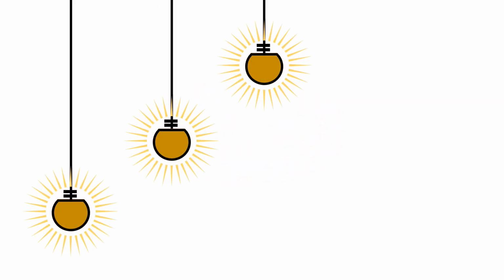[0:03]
Can we make a very low-cost water activity meter for foods, costing only $20?
I was invited as a speaker to the 15th International Symposium on the Properties of Water, that is ISOPOW 15, which was held at Purdue University, West Lafayette, Indiana, USA. It was from 11 to 13 June 2024. This ISOPOW was honoring Professor Ted Labuza's contributions to the understanding of food material science and water activity.
In that conference, my colleague Professor Wes Vandery mentioned to me, "Shofir, you could make a water activity meter costing only $20." I asked him, "Is it?" I fabricated one and tested its performance. Please keep watching this video until the end and you'll find more on it.
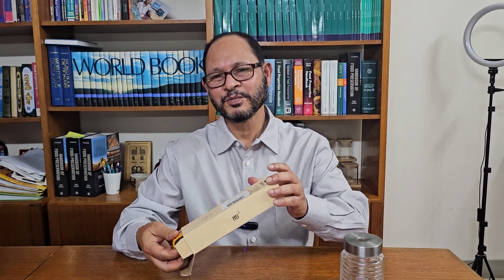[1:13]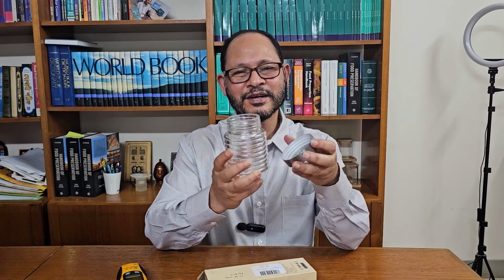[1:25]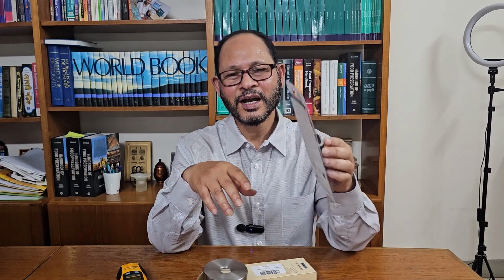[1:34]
I ordered a digital hygrometer or air humidity meter through the internet. Its cost is less than $20. I purchased a glass jar to hold the sample, and the jar cap has rubber coating to make it airtight when it is closed. In addition, I had araldite glue at home. I am now showing how to make a cheap water activity meter.
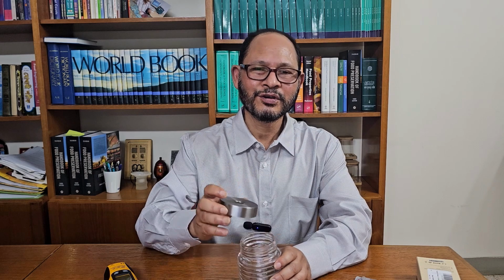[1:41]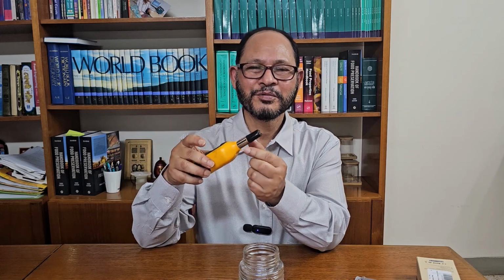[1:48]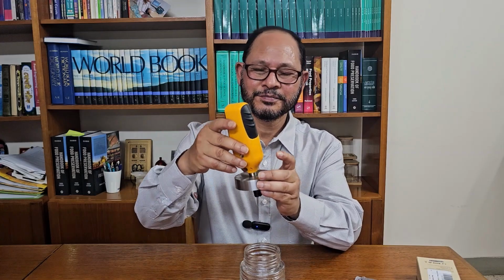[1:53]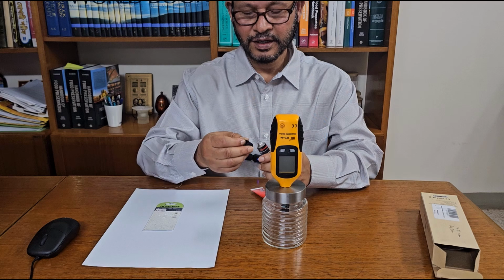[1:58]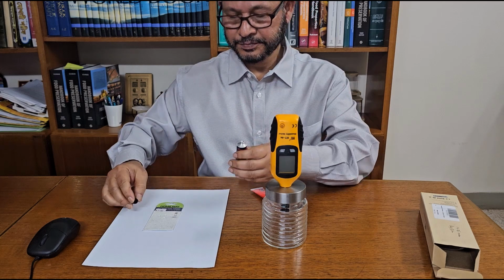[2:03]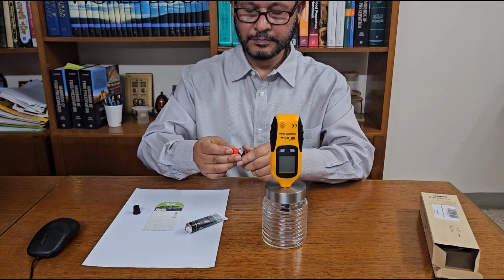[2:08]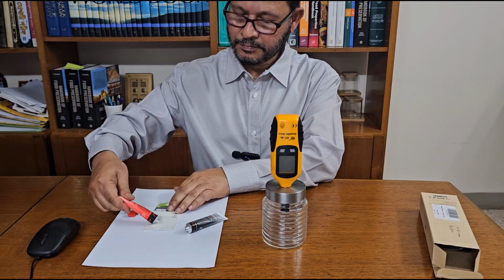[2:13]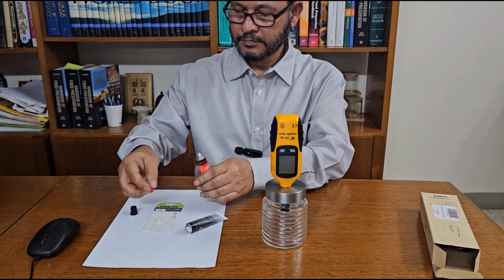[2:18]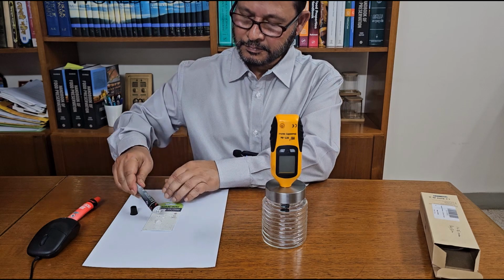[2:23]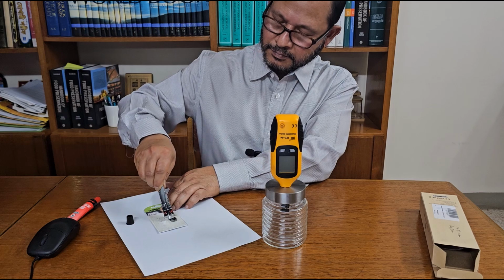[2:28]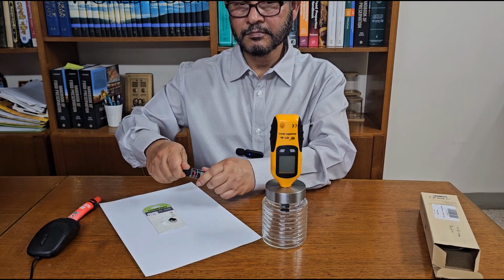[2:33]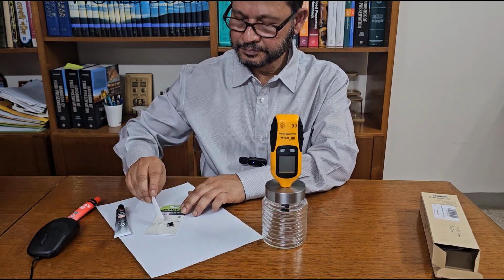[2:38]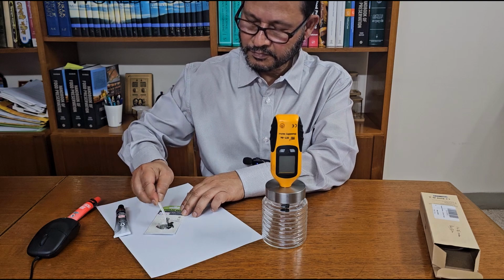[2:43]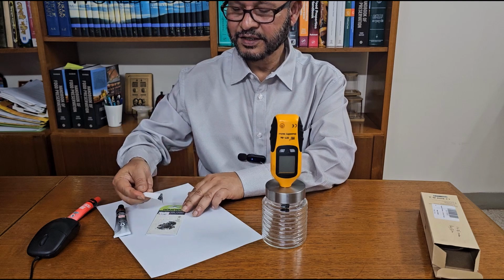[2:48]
I made a hole in the jar lid, the same as the diameter of the hygrometer tip. I am now fixing the hygrometer inside the jar lid with glue. Now I am putting the araldite glue. It is setting; the pack mentions that it will set within 4 minutes.
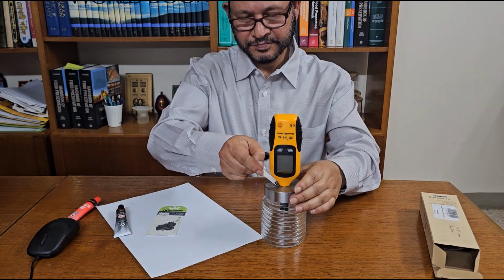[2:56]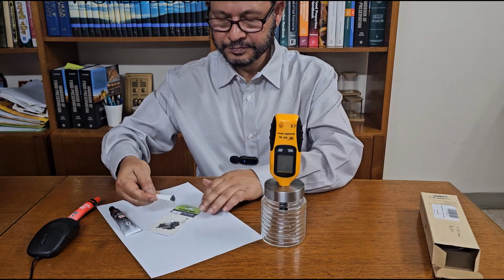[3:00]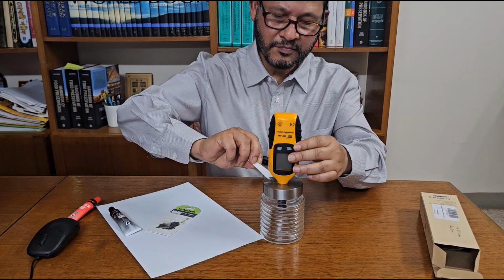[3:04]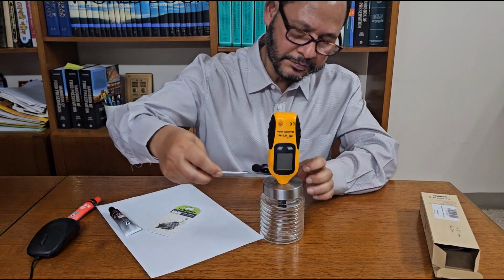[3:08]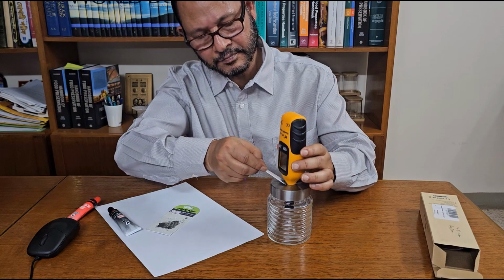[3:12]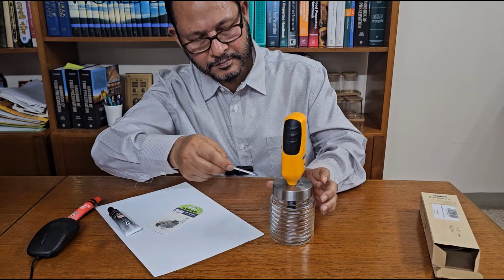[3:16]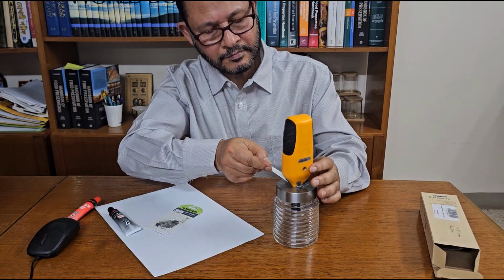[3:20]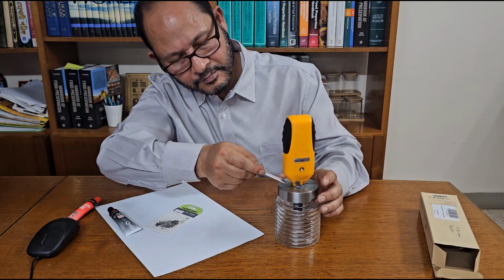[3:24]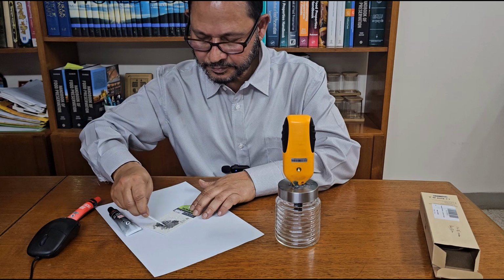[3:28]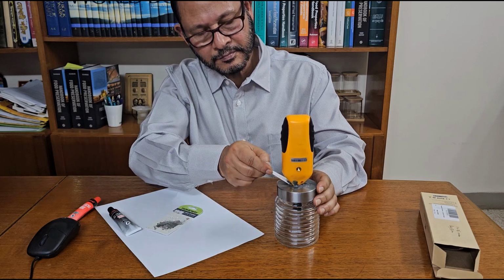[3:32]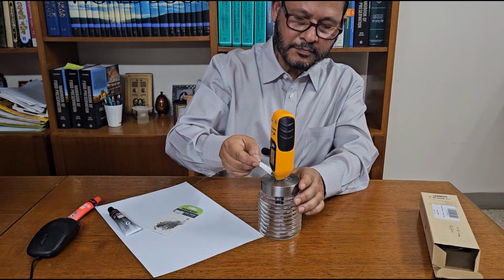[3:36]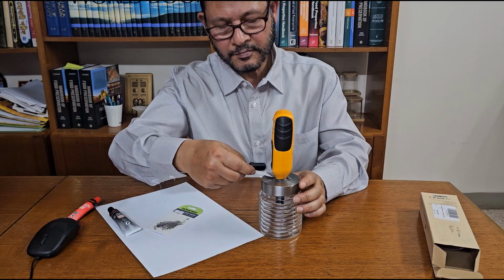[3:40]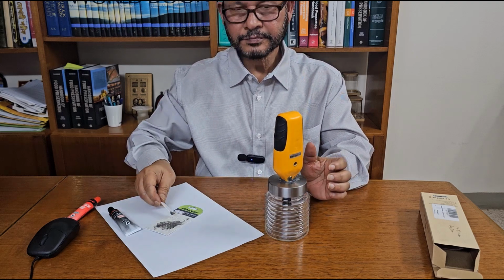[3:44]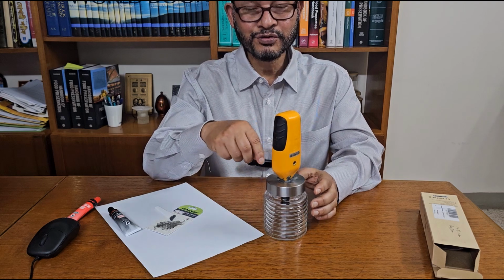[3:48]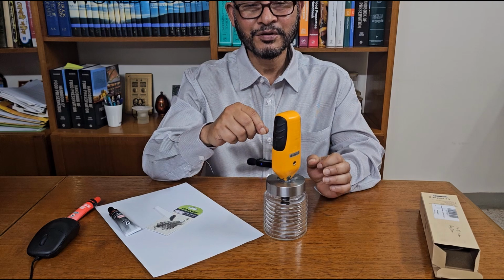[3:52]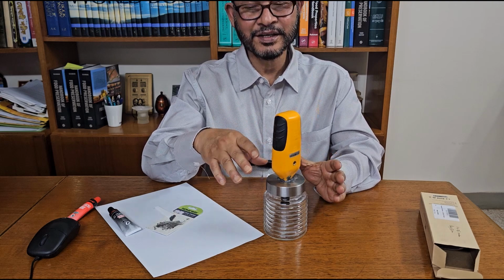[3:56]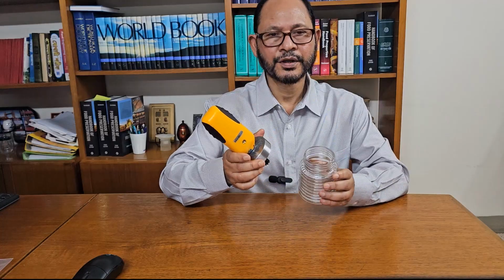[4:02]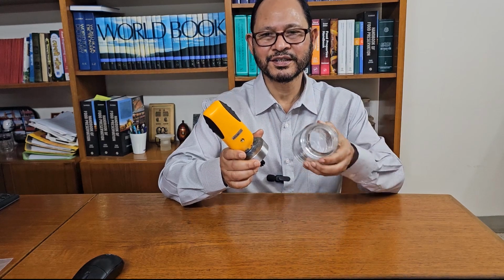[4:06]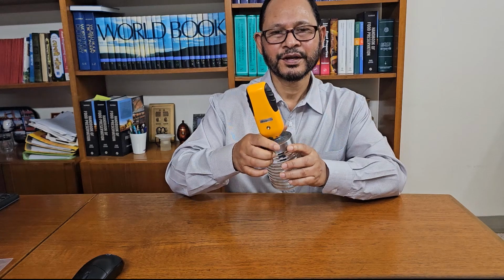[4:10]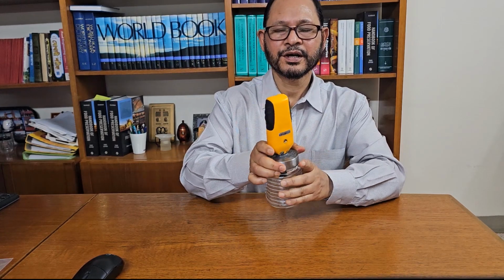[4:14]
I'll put two layers of the super glue so that we make sure there is no leak, and after setting, the water activity meter is ready to be checked for its performance. We could make a blank run first, that is, no food inside the jar. Close the jar with the lid and turn on the humidity meter.
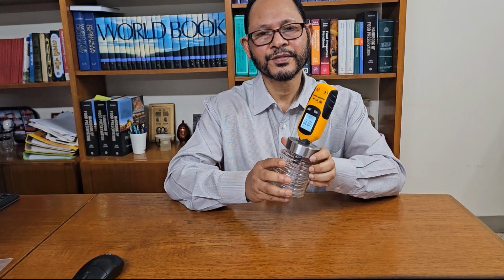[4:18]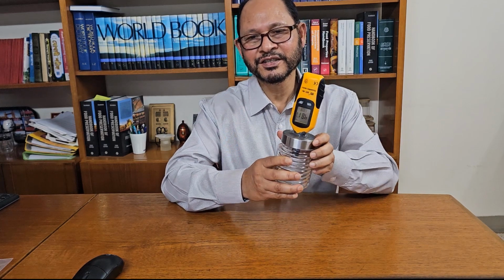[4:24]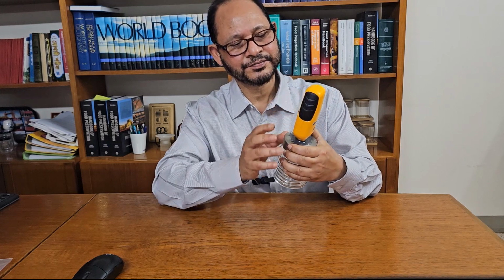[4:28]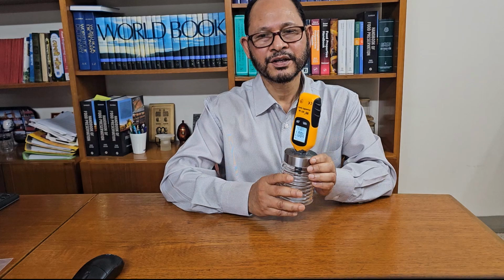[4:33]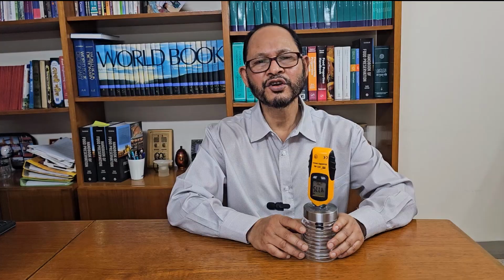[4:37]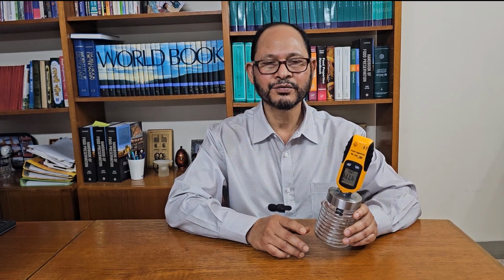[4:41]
We could see the relative humidity reading on the display of the hygrometer. The reading is now showing 48.13. That is water activity 0.4813. In order to check the performance of the water activity meter, we need to find its accuracy or error,
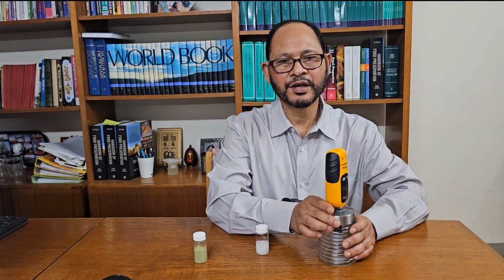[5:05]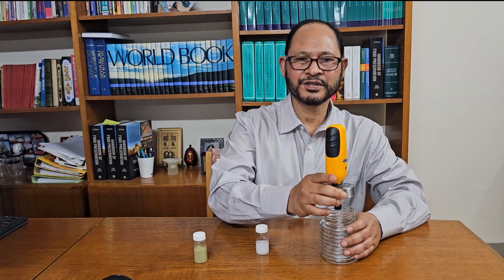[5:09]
calibration, standards, variability or reproducibility, sensitivity and stability. While I am checking the performance of the water activity meter, I would like to explain these terms clearly. These are important before using an instrument for measuring food properties. Now I am measuring the water activity of a saturated salt solution of potassium chloride.
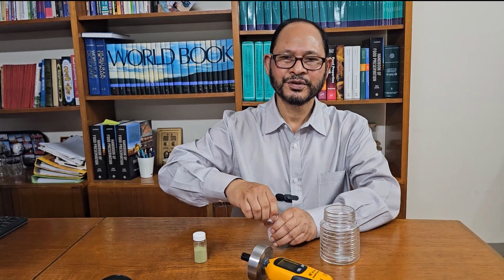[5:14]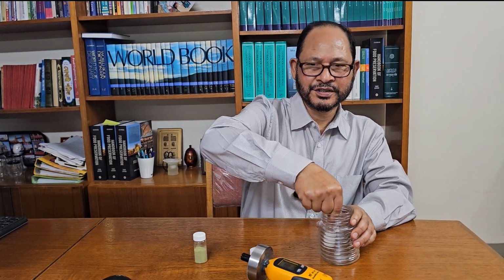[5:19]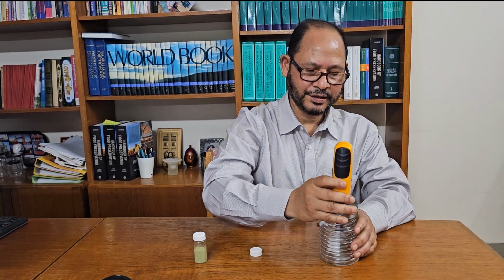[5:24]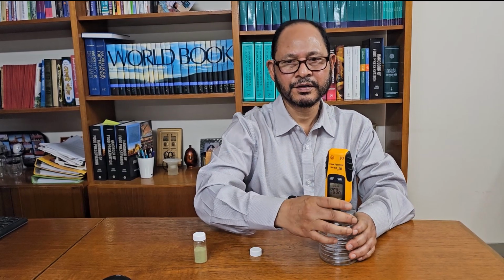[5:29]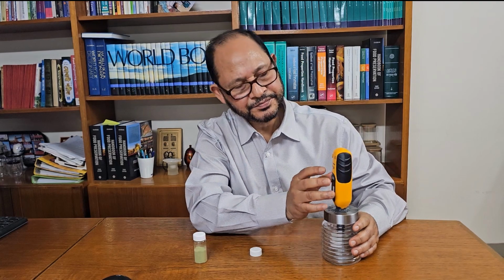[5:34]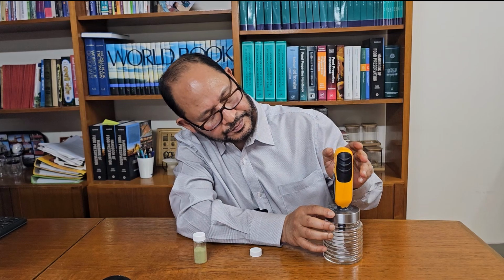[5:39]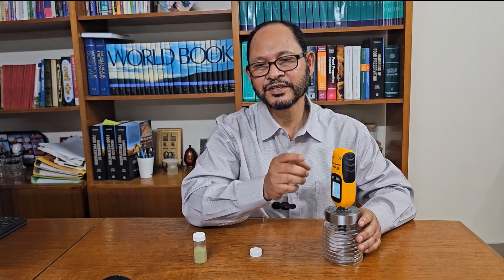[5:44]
I am placing a glass bottle with saturated salt solution of potassium chloride, and then I close the glass jar. I need to keep recording the relative humidity. At equilibrium conditions, relative humidity is equal to the water activity of the solution.
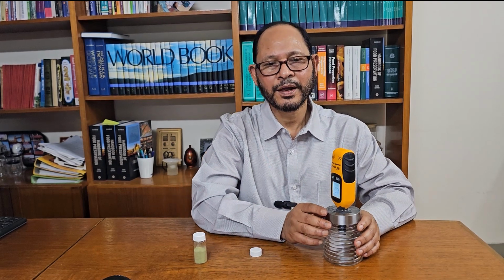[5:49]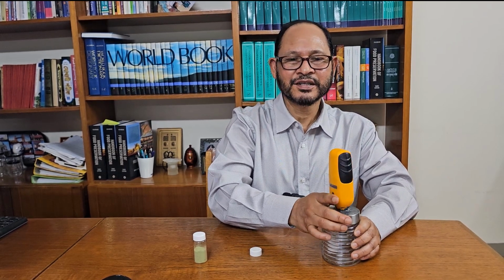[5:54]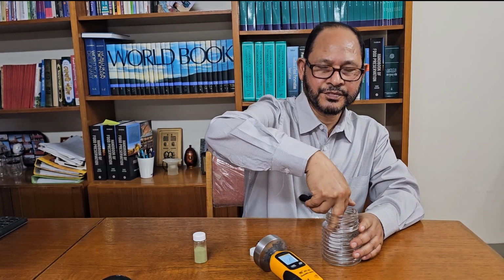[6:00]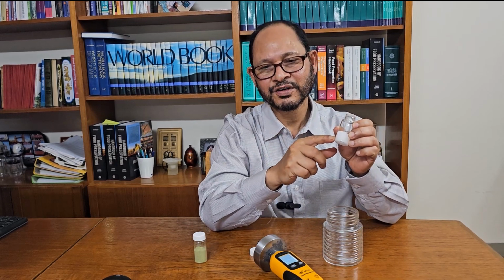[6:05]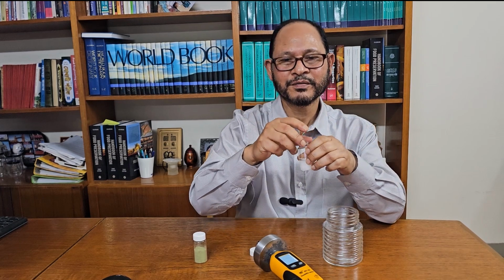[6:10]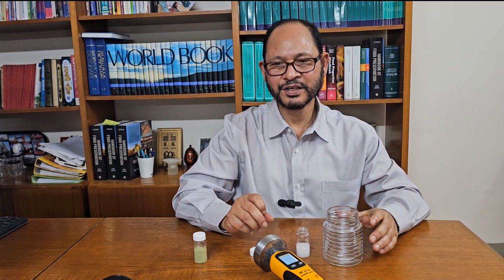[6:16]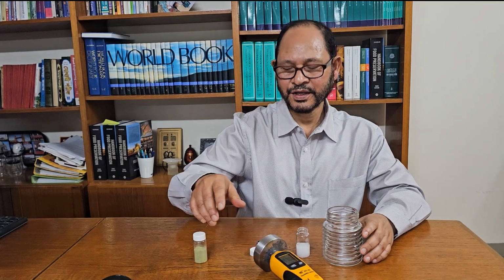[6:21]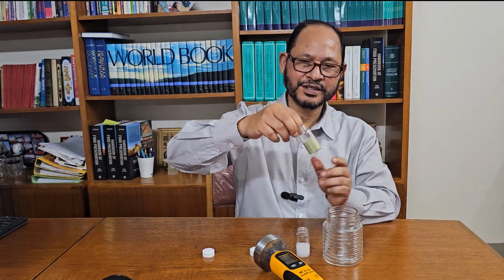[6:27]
In order to maintain a constant relative humidity of the air inside the jar, the solution must be saturated. The saturated conditions could be ensured by a layer of salt crystal at the bottom, as you could see. This way, we could check the performance using saturated potassium chloride solution, whose water activity is known as 0.851 at 20 degrees C.
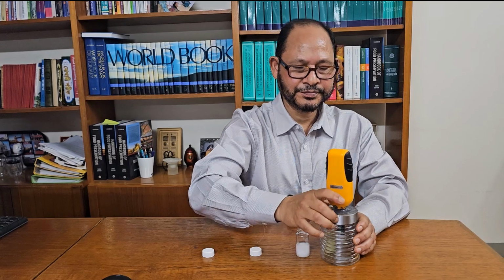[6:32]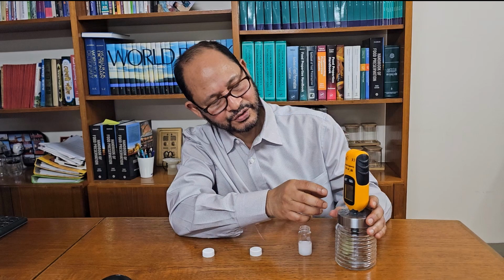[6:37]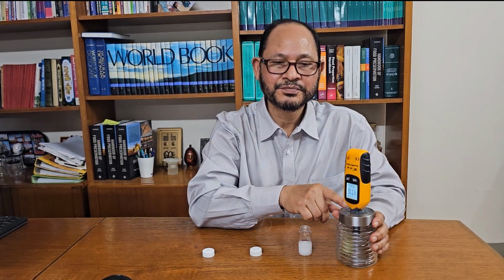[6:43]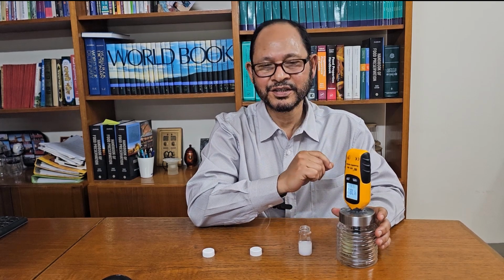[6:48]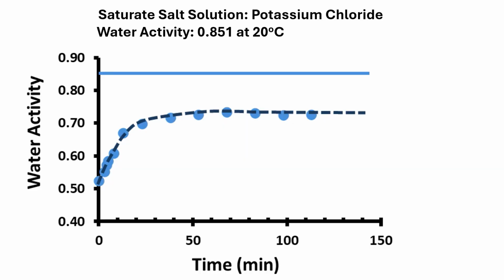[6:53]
In order to measure the sample water activity, we can again place the sample inside the glass jar and close with the lid, and record the relative humidity over time. When it reaches equilibrium, that is the water activity of the sample inside the jar. I have plotted the water activity reading of the air inside the jar as a function of time as shown. We observed that after 60 minutes, the air was equilibrated with the saturated salt solution of potassium chloride.
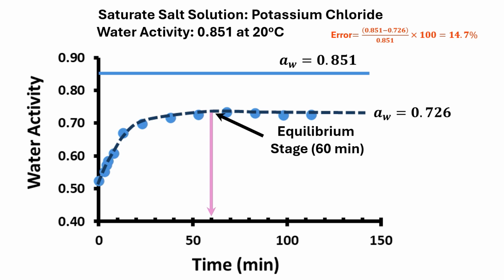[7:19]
The reading at equilibrium was 0.726, while the standard value is 0.851. We could calculate the error as (0.851 minus 0.726) divided by 0.851 times 100, which is equal to 14.7%. Alternatively, accuracy is 100 minus 14.7, equal to 85.3%.
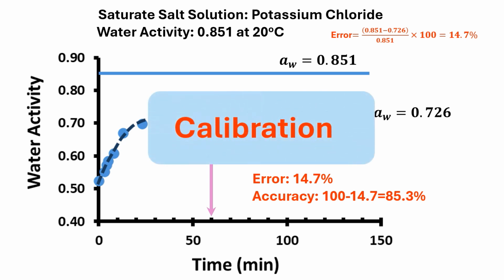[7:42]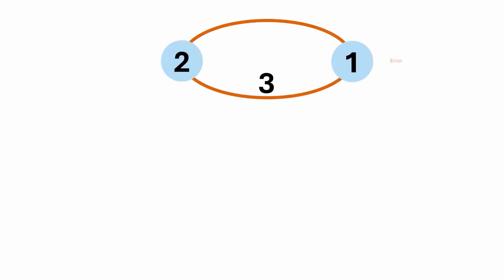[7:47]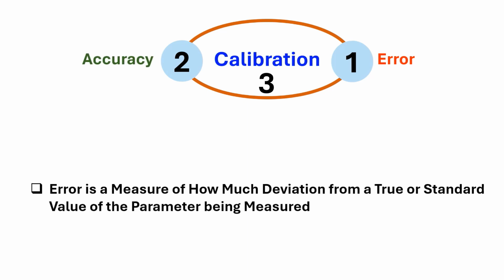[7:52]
Considering error of the measurement, we need to calibrate the water activity meter. Now we can understand error or accuracy and calibration. Error is a measure of how much deviation from a true or a standard value of the parameter being measured, while accuracy is a measure of how close one can measure the true value, that is a standard, of a parameter being measured. Error and accuracy are related, that is accuracy is equal to 100 minus error.
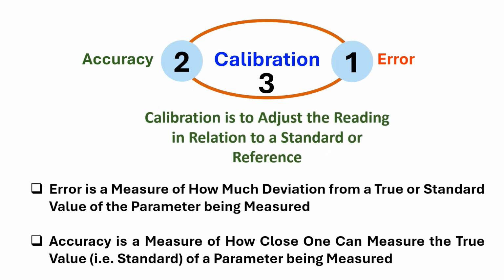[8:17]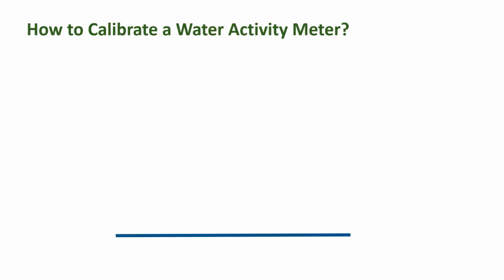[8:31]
Calibration is to adjust the reading in relation to a standard or reference. It is to minimize any measurement uncertainty and control errors by ensuring the accuracy of an equipment. How to calibrate a water activity meter?
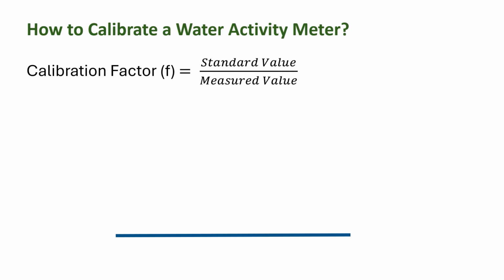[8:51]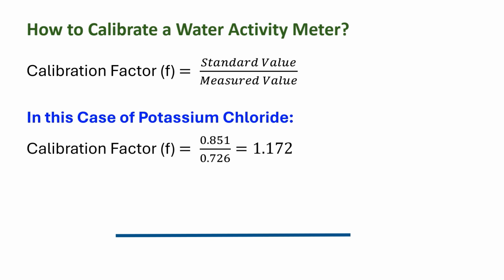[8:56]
In an earlier slide, we used saturated salt solution of potassium chloride with water activity 0.851. The actual reading was 0.726. We can calculate a correction factor F as actual value divided by measured value. In this case of potassium chloride, F is equal to 1.172. We can determine the actual value if we multiply the measured value by the correction factor. In this case, saturated potassium chloride solution is a standard.
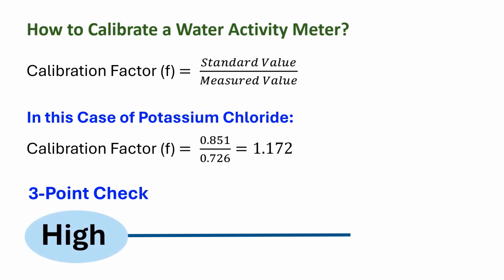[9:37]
If we want to measure water activity from 0.05 to 0.99, then it is important to know whether the correction factor is constant over the measurement range. In many cases, 3-point or 5-point checks are used. A 3-point check encompasses a high, middle, and low range check. The 5-point check is at 1, 0.75, 0.50, 0.250. Many equipment has the option to press it to zero, that is make the correction factors adjusted automatically.
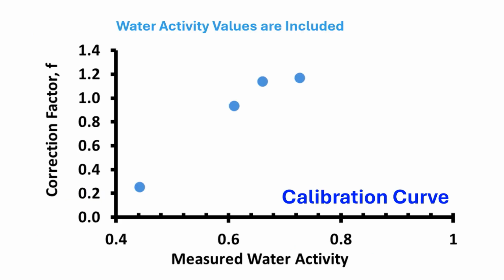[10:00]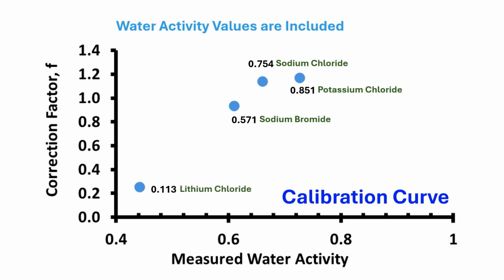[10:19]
We calibrated the water activity meter using saturated salt solution of potassium chloride, water activity 0.851, sodium chloride, water activity 0.754, sodium bromide, water activity 0.571, and lithium chloride, water activity 0.113 at 20 degrees C.
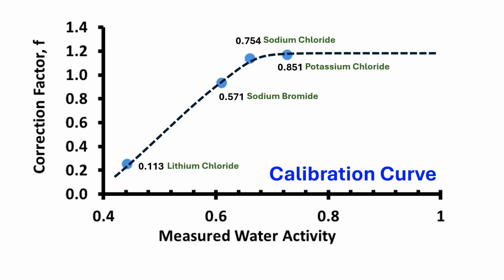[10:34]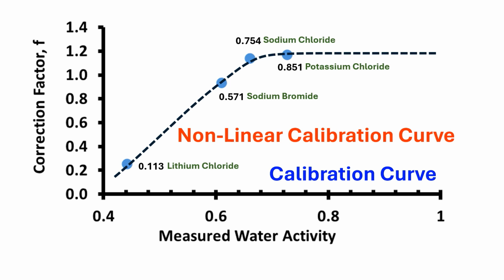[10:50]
A standard or calibration curve can be developed by plotting correction factors as a function of measured water activity. It would be very good if the calibration factor remained constant within the entire range. If not constant, it would be better to have a linear correlation. In this case, we observed a non-linear calibration curve. It is interesting to see that at lower activity range, the measurement may not be very sensitive.
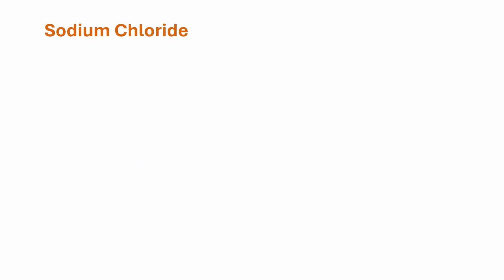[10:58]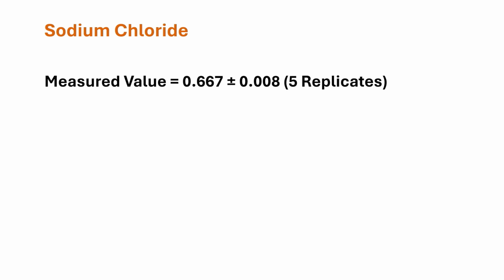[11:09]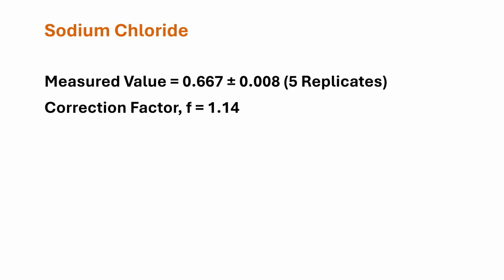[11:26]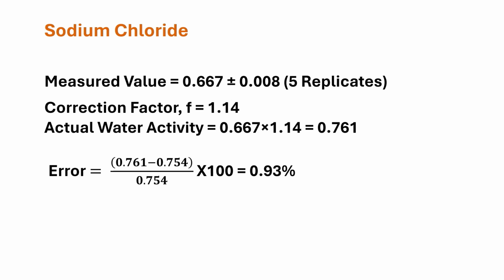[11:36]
We measured the water activity of saturated salt solution of sodium chloride, and the actual value was determined using this calibration curve. The average value of 5 replicates was 0.667 with a standard deviation of 0.008. The actual measured value can be calculated using the correction factor 1.14. The actual water activity was 0.761. The error is 0.93%, that is less than 1%. Without calibration, the error was 11.5%. This indicates the importance of calibration of this water activity meter.
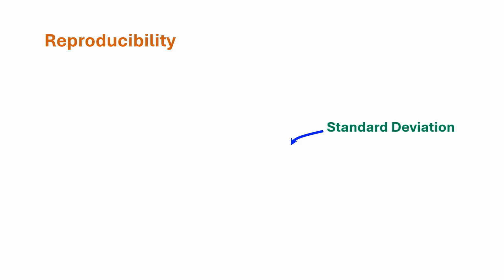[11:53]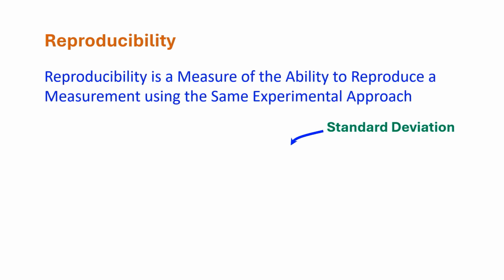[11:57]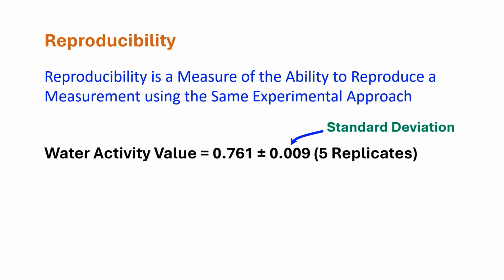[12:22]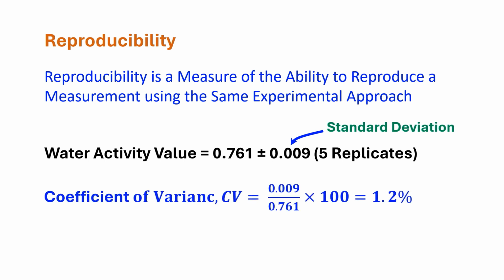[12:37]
Now we could explain the reproducibility and sensitivity of the measurement. Reproducibility is a measure of the ability to reproduce a measurement using the same experimental approach. It is commonly explained by the coefficient of variance, which is equal to the standard deviation divided by mean. Lower coefficient of variance, more reproducible. The average water activity value was 0.761 plus minus 0.009 with 5 replicates. It was after using a calibration curve. Coefficient of variance is equal to 0.009 divided by 0.761 times 100, which is equal to 1.2%.
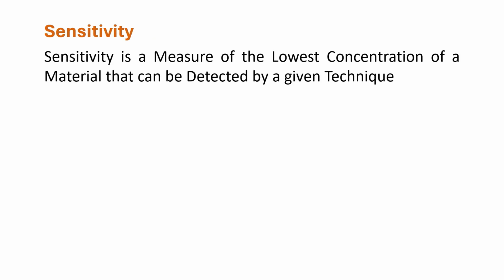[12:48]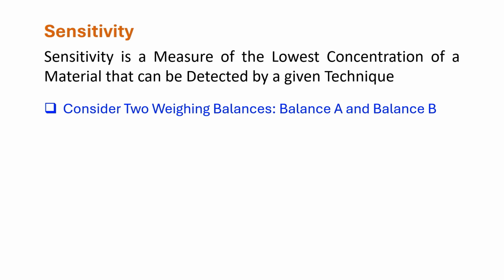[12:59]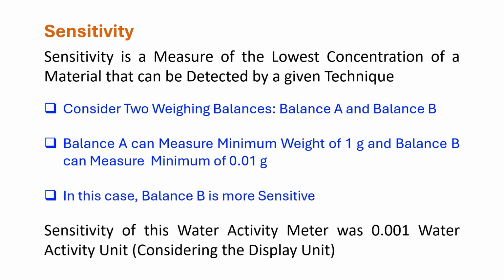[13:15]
Sensitivity is a measure of the lowest concentration of a material that can be detected by a given technique. Consider two weighing balances, balance A and balance B. Balance A can measure minimum weight of 1 gram and balance B can measure minimum of 0.01 gram. In this case, balance B is more sensitive. The sensitivity of water activity meter was 0.001 water activity unit considering the displayed reading. However, it should be assessed experimentally.
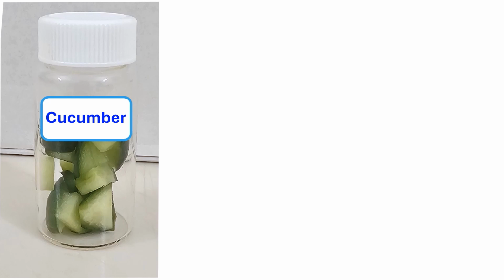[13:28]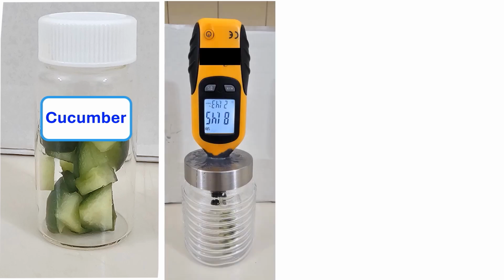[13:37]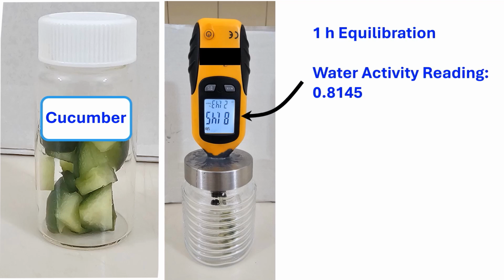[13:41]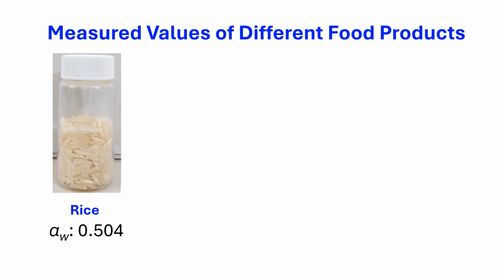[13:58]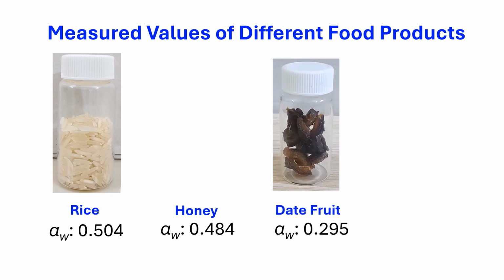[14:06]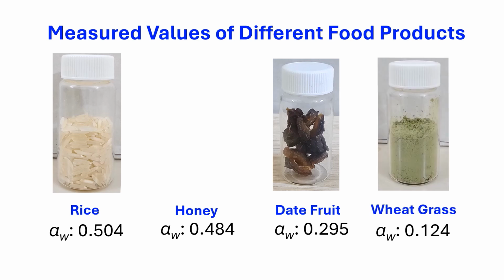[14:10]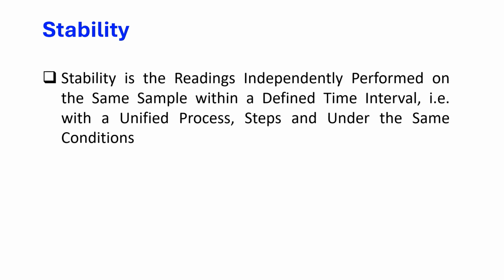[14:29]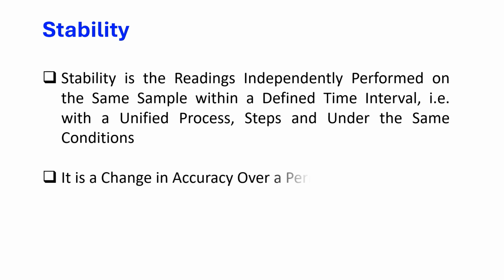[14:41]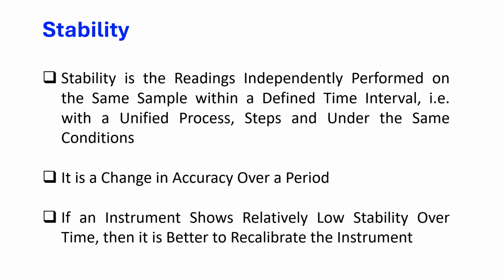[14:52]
Stability is the readings independently performed on the same sample within a defined time interval, that is with a unified process, steps, and under the same conditions. It is a change in accuracy over a period. For example, the difference of readings between today, tomorrow, and after 7 days. If an instrument shows relatively low stability over time, then it is better to recalibrate the instrument every time. It is also considered as drift, which is a measurement error caused by the gradual shift in measured values over time.
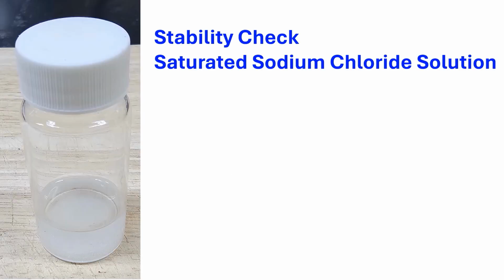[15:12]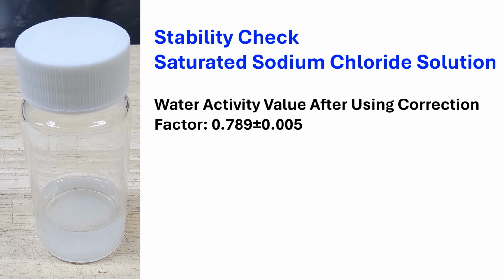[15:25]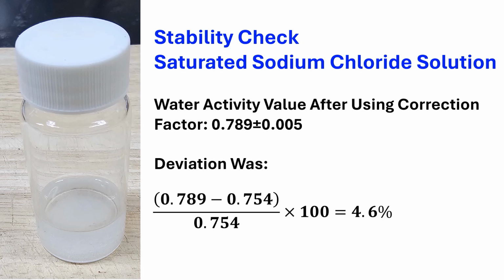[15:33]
We measured the water activity of saturated salt solution of sodium chloride again after 5 days in order to see the stability of the water activity meter. The average value of 5 replicates was 0.789 with a standard deviation of 0.005. The deviation was estimated as 4.6%. Therefore, it is better to calibrate the water activity meter from time to time.
In addition to checking the performance of a fabricated low-cost water activity meter, I have provided an understanding on the accuracy or error, calibration, standard, variability or reproducibility, sensitivity and stability. This would help to use any instrument for an acceptable measurement of food properties. The take-home message is that if you buy a low-cost instrument or fabricate one by yourself, then you need to check its acceptability considering the attributes as I discussed in this video.